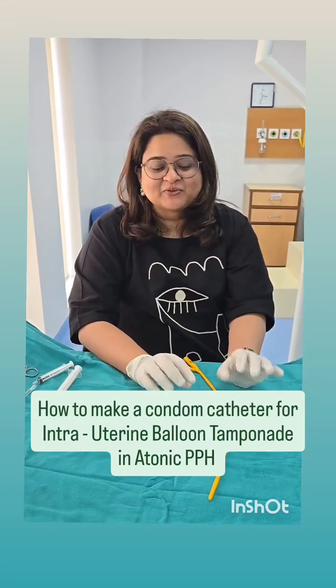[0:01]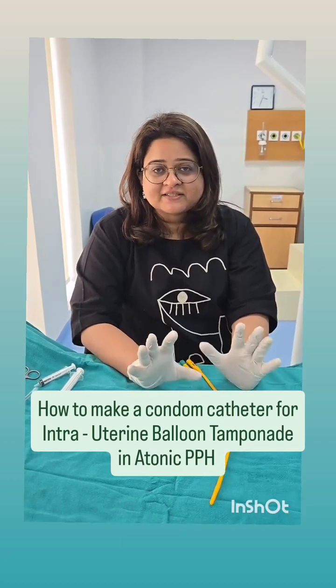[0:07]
Hi everyone, today I'll be showing you how to make a condom catheter which we can use for intrauterine balloon tamponade in a patient who's had atonic PPH. Now the ideal catheter is the Bakri tube, but that is expensive and it's not very commonly available.
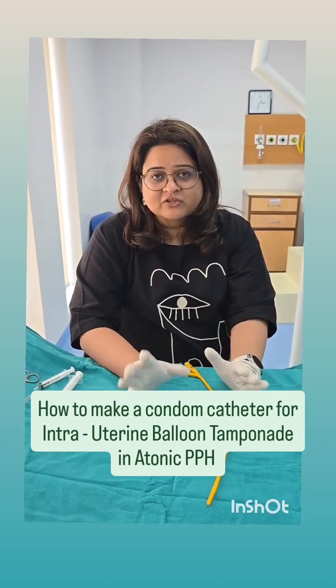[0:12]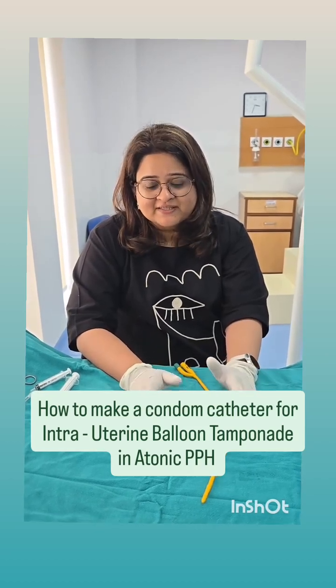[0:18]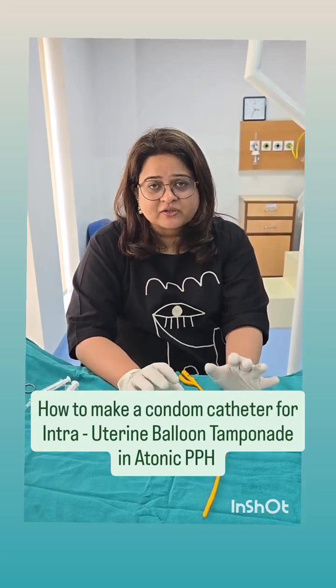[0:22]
So what we can use in place of a Bakri, and which should be there in all obstetric centers, is a condom catheter. Everyone should know how to make this catheter, because when the time arises it's very difficult to then look around for things. So this is how we make an intrauterine balloon tamponade using a condom catheter.
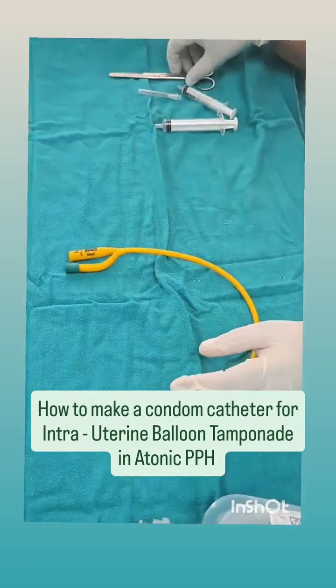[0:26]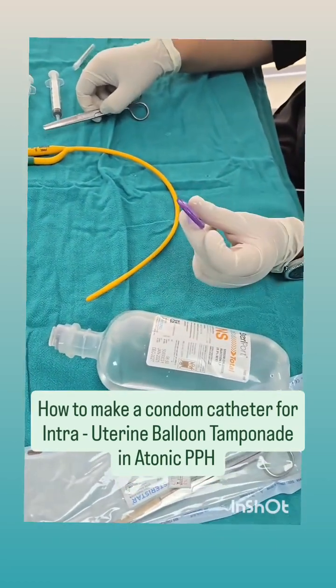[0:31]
So what we need is a simple Foley's catheter, a syringe, scissors, and a condom. So these are the things that we need to make the catheter.
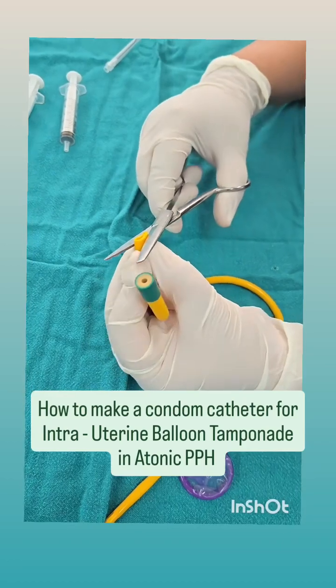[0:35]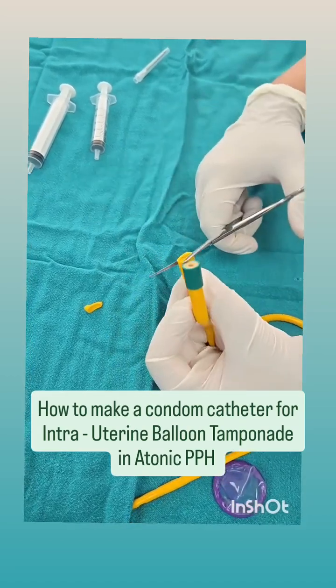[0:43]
The first thing we do is we take the scissors and we cut two small rings like this from this end. This is required because these will act like rubber bands when we fix the condom onto the catheter. So I've cut two small rings like this, and that is what we will use later on.
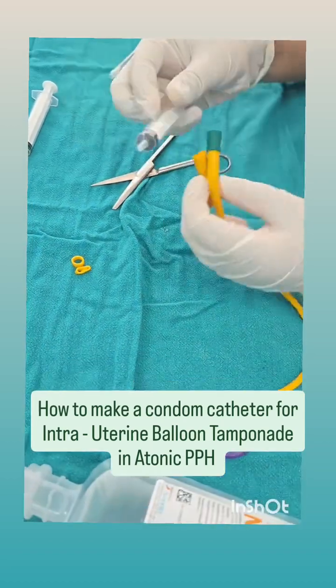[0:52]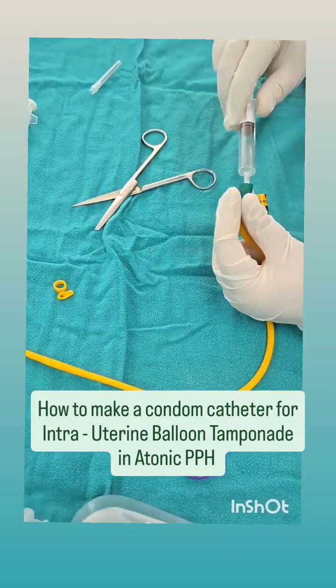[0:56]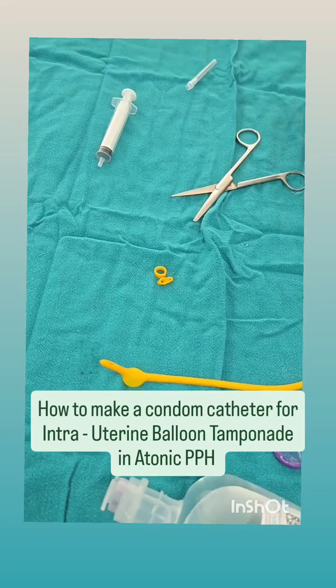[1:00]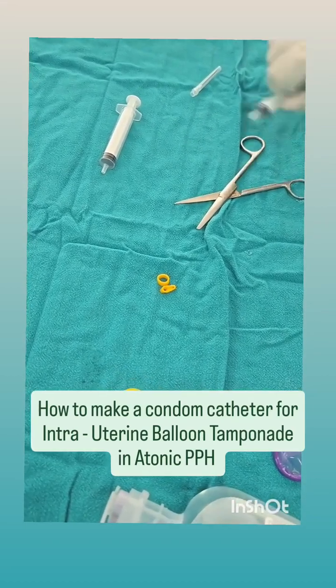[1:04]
The next thing we do is, using air, we inflate the bulb of the Foley's. So just take 5 ml of air in the syringe, and we will inflate the bulb. So you can see the bulb is inflated there. I'll just inflate a bit more, and now we will cut this bulb.
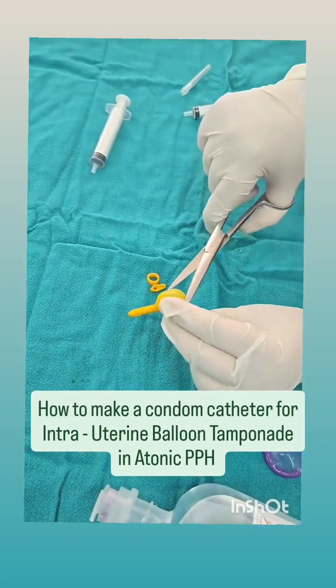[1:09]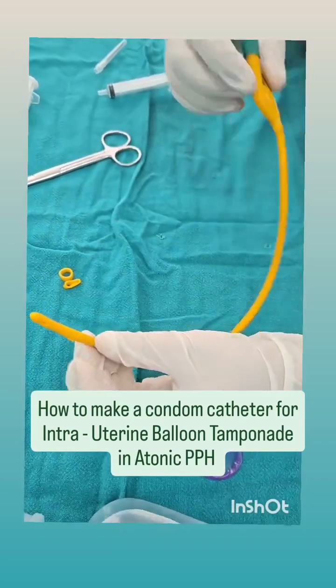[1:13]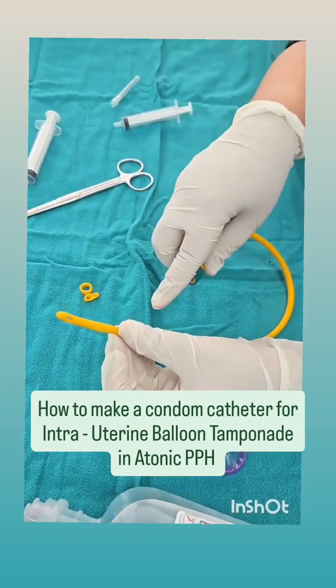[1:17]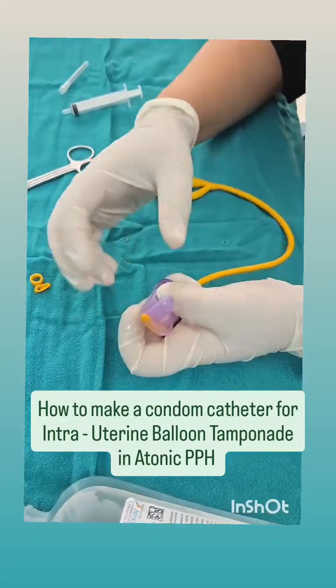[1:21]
We've cut the bulb. Why have we done this? Because when we inflate saline, it will fill the entire condom. Next, we take the condom and we put it over the catheter like this. And then using those rubber bands which we had cut earlier, we're going to tie it around the catheter.
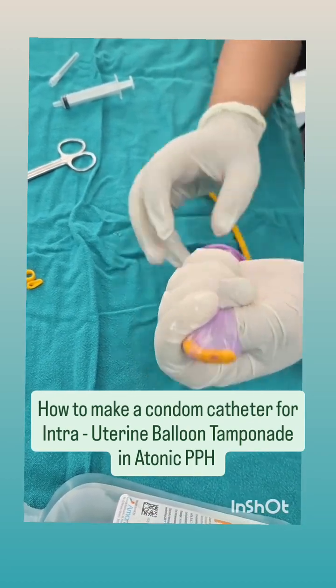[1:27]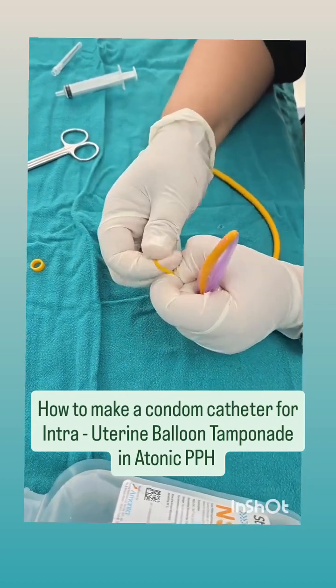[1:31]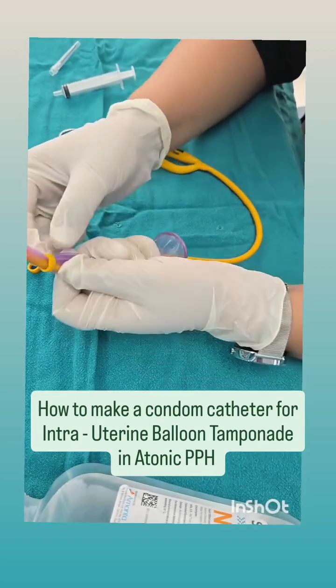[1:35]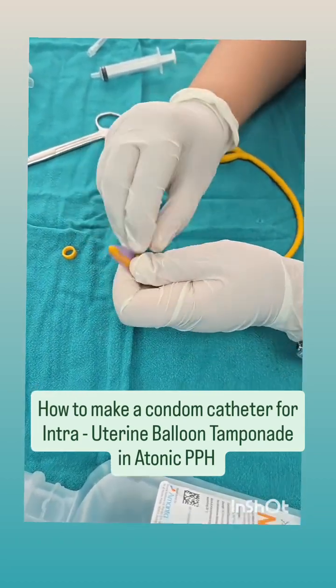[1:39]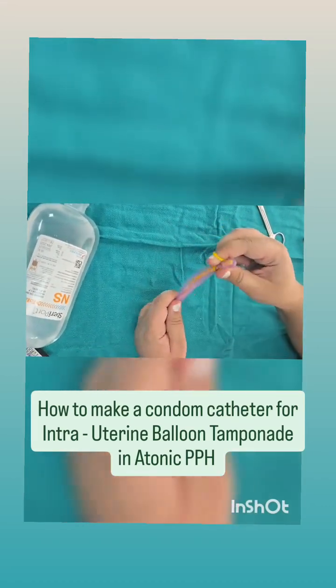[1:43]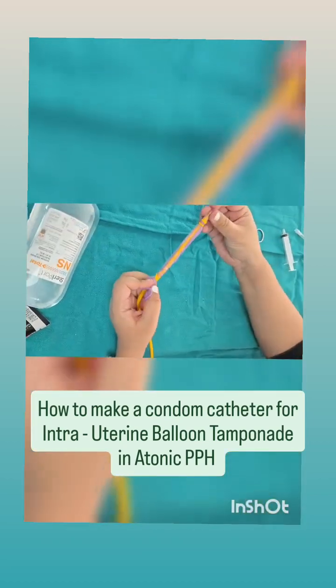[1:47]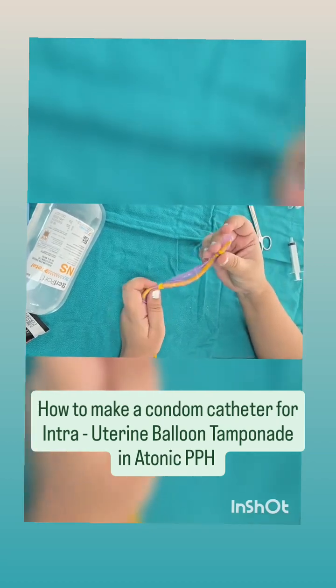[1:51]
So we take the first one and we put it around the catheter like this. It should be somewhere around here, and we'll take two ties around it so that we make sure it's tight. Now we take the other rubber band and we put it at a lower level somewhere here. So you can see we've put the two rubber bands and we've tied the rubber band twice around the condom.
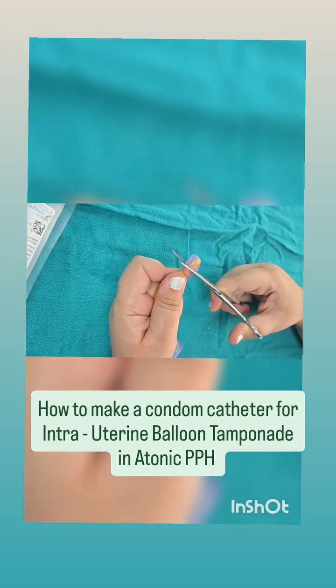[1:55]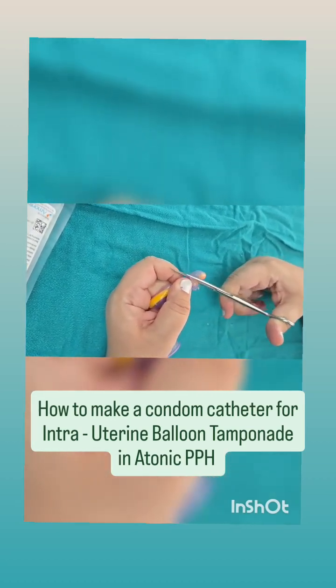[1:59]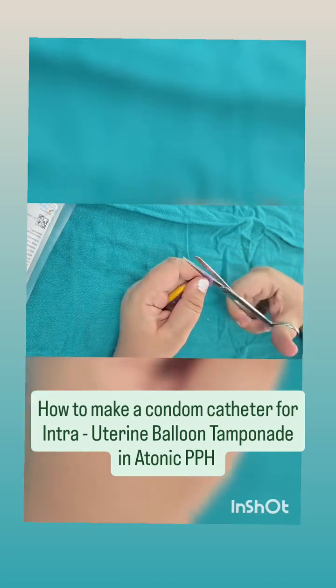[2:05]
Now what we do is we take the scissors and we cut the tip of the condom with the catheter. This is going to allow for drainage to take place. While the catheter will create a tamponade once we fill it with saline, this tip will allow blood which is collecting inside the uterus, if any, to come outside. So here we have the tip which acts as a drainage.
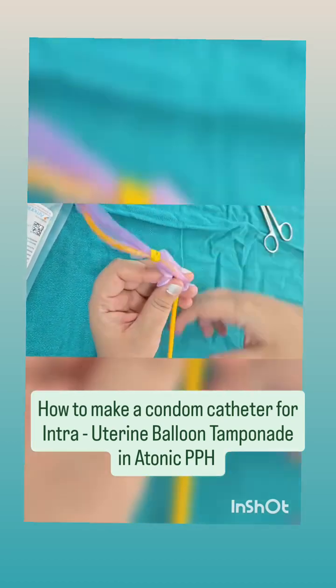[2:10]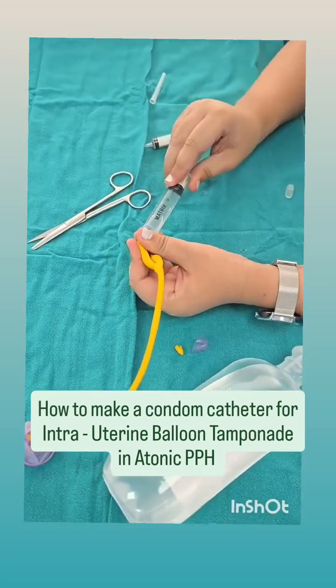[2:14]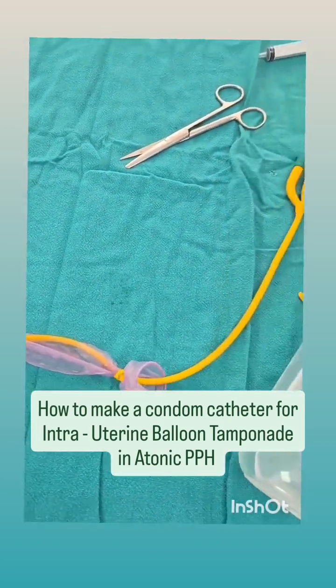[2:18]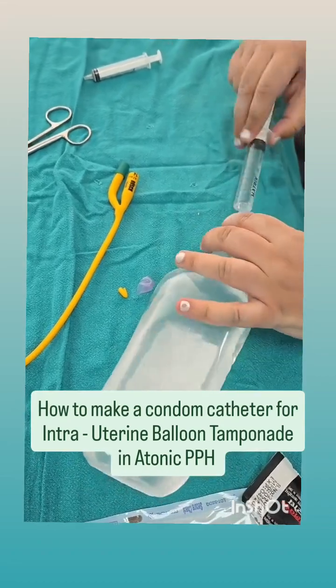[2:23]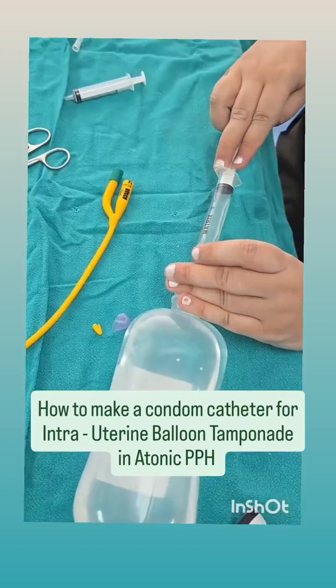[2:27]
Now we'll fill saline and show you how the catheter will fill up. So now we'll fill saline in the catheter and you can see it is filling up. Approximately 300 to 500 ml of saline is required to create a sufficient intrauterine tamponade. The other end can be connected to a uro bag to allow for drainage.
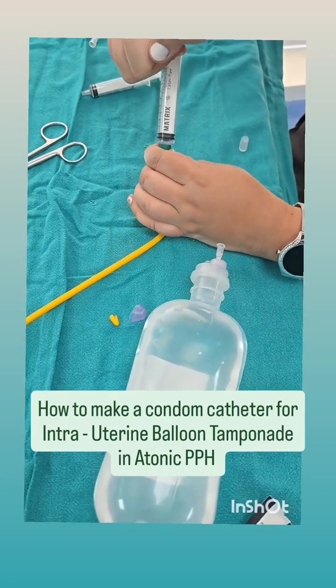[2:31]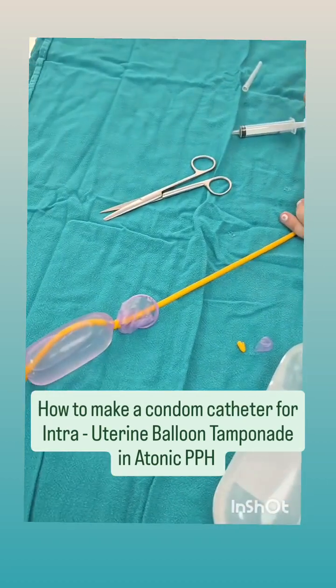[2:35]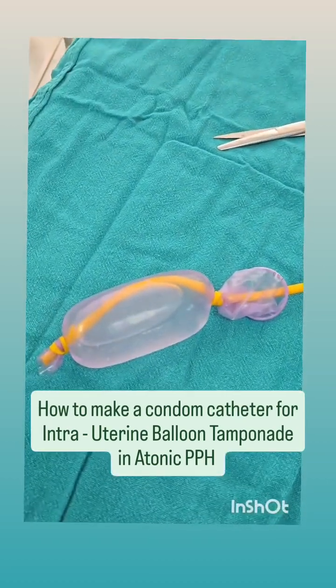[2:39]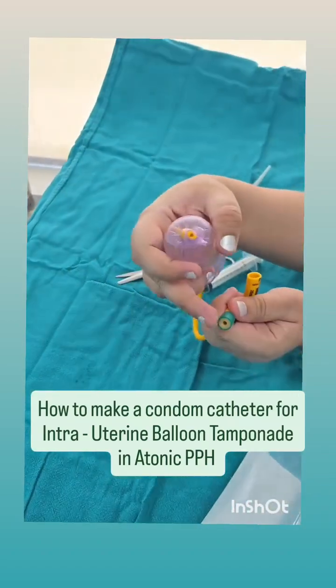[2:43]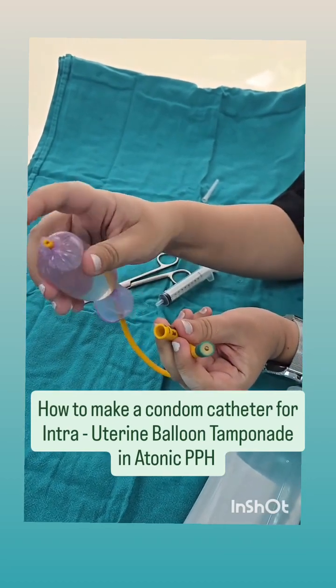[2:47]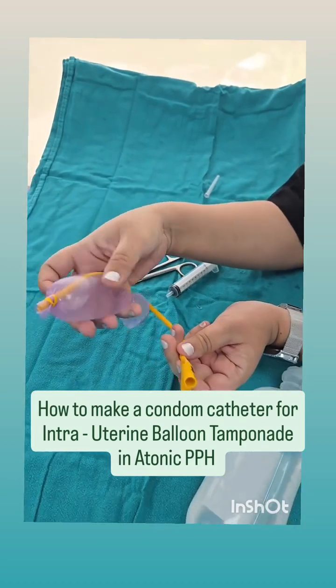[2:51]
So as you can see, we are inflating the catheter and the condom is filling up, and this creates a good tamponade which stops the bleeding. So you can see this is the condom catheter. This end is through which we fill the saline, and this end can be connected to a uro bag or a drain, and this will allow drainage of blood from within the uterus. So this is how you fashion an intrauterine balloon catheter using a condom.